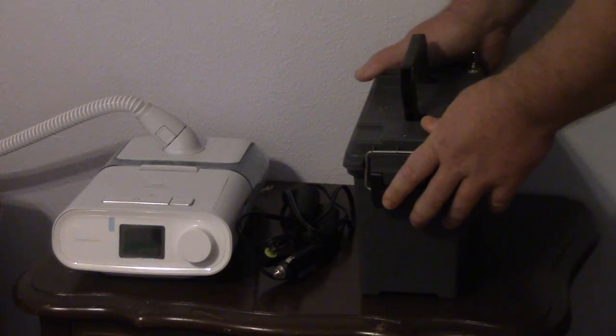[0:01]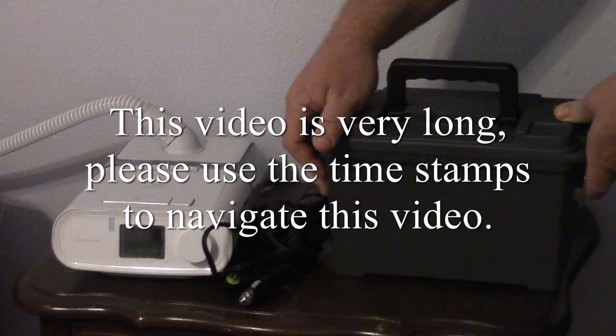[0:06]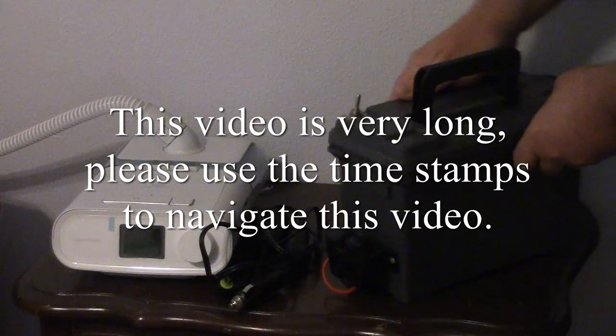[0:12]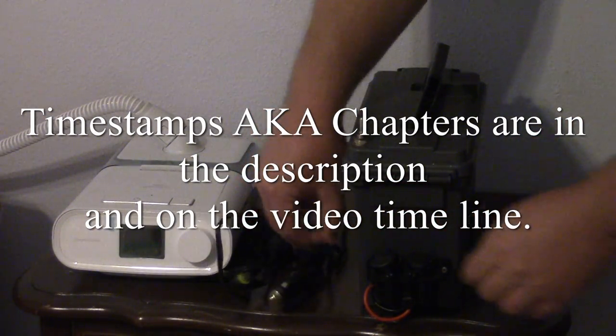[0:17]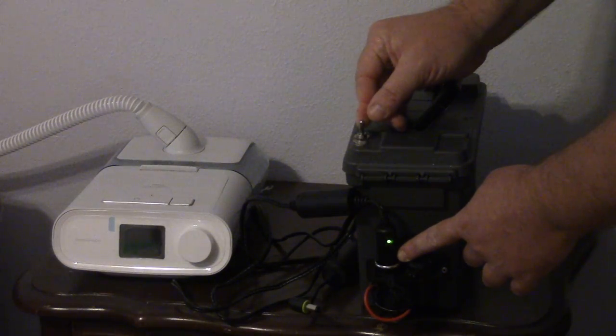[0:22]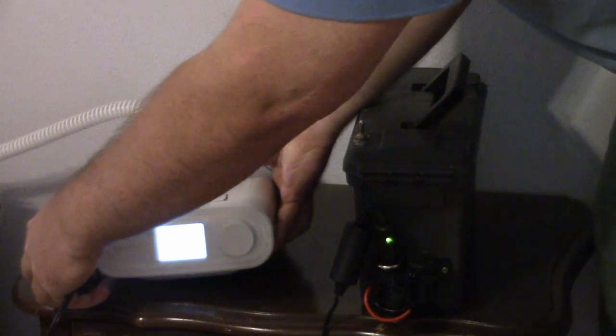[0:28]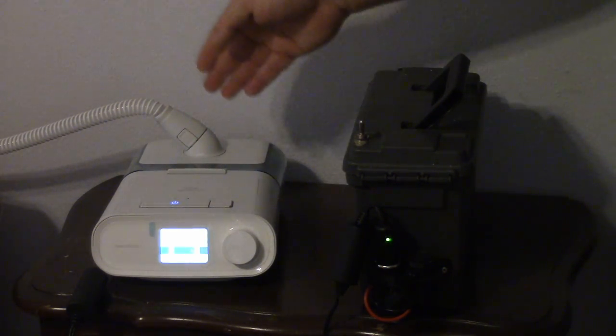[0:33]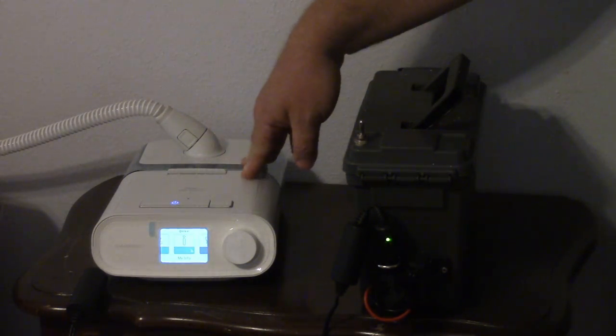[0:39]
Alright, I have built a battery backup box for my CPAP. It's a lithium ion battery, which is inside this nifty little ammo case from Harbor Freight. And it puts out a regulated 12 volts. So with my on-off switch, I can power it up and turn on my CPAP. This CPAP currently is set to have the heated hose, the humidity, and full pressure.
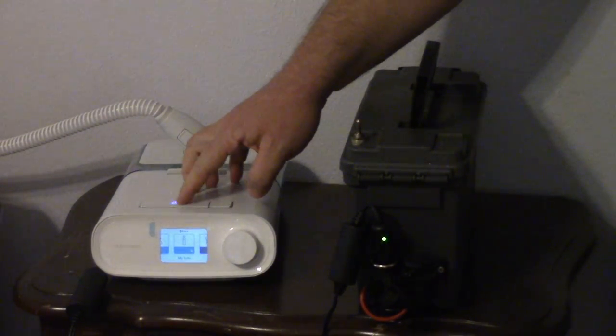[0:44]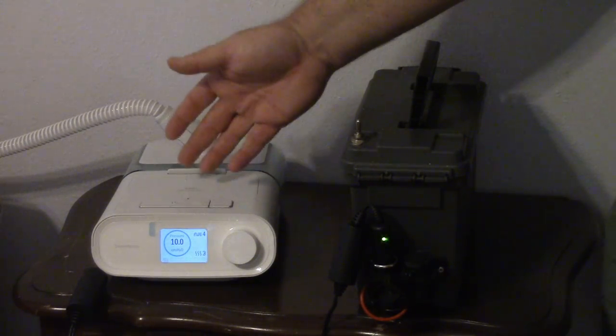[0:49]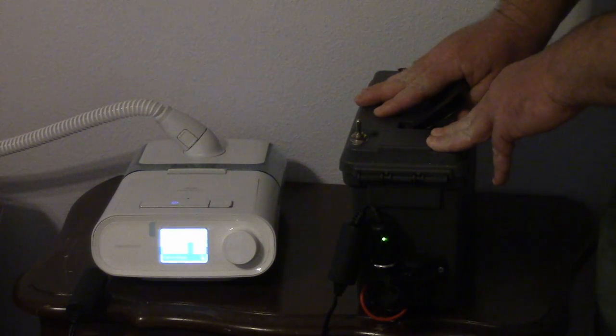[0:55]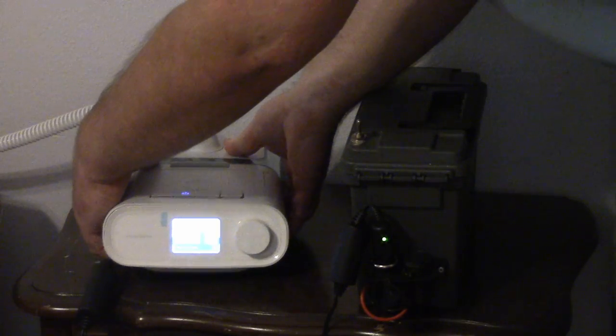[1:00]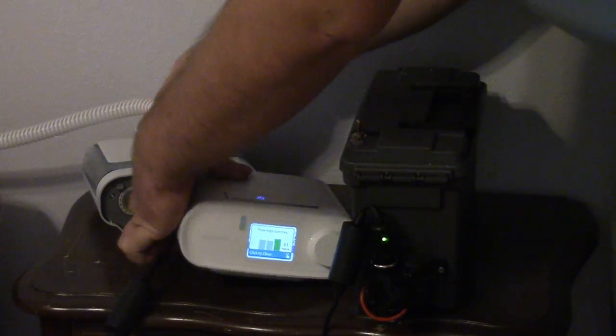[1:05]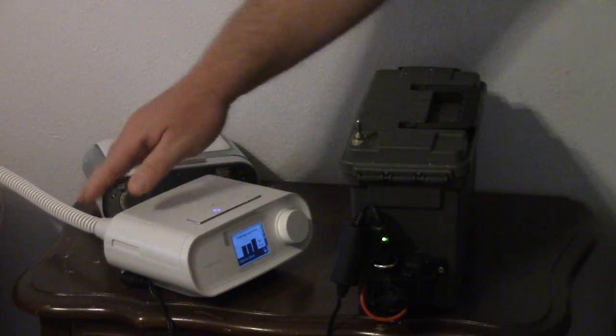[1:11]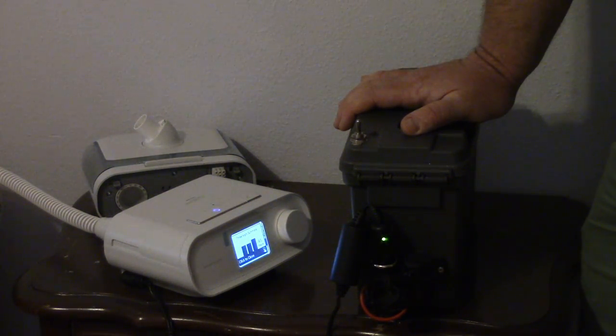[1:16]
And this little battery, it's not that little, it's pretty heavy, totally can run this. It might have enough power to actually run it for 8 hours. But if you reconfigure your CPAP, where you take the humidifier off, plug directly into the back of the CPAP, where you have no heat on the hose and no humidity, I think this thing could run it for like a week or more.
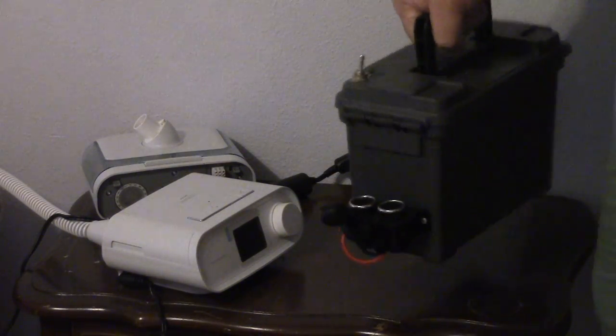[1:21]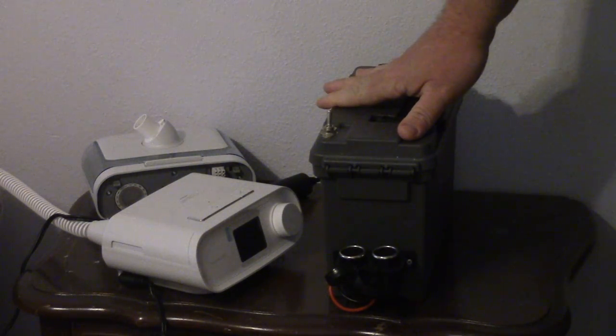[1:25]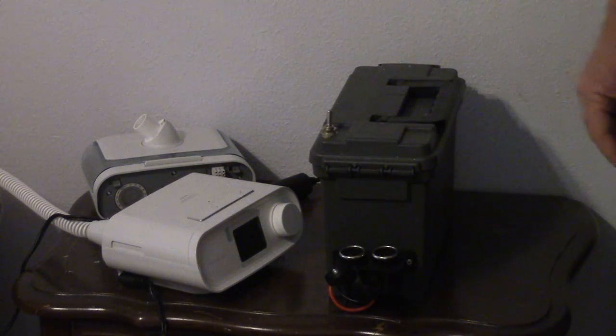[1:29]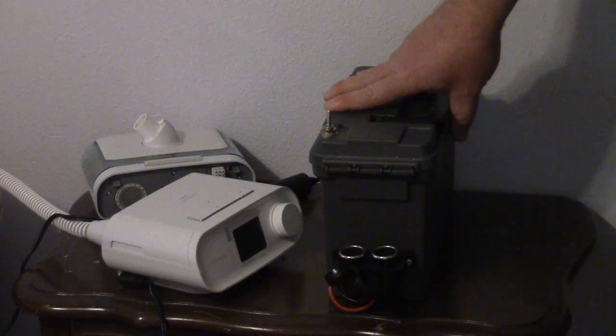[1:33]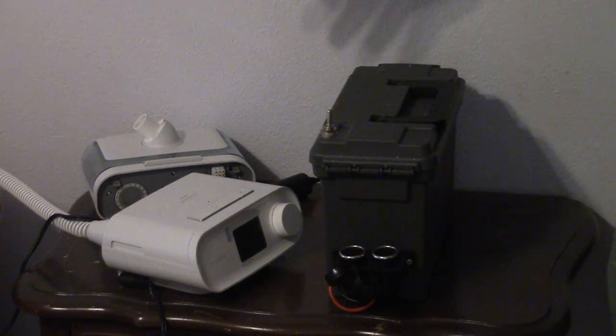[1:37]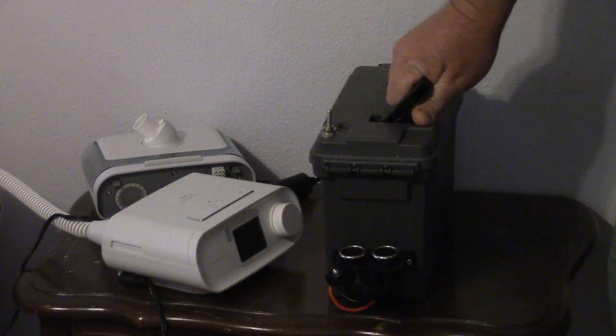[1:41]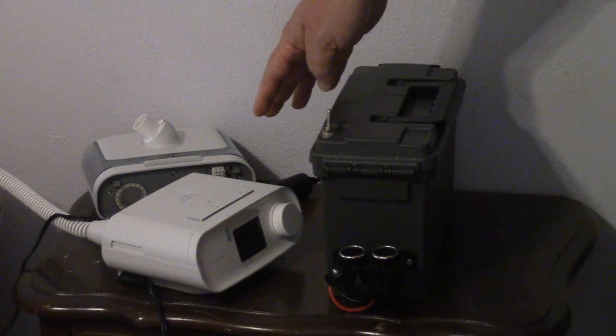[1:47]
And it's kind of heavy. I mean, you could carry it if you're backpacking, but you know, car camping or power outages, there's a lot of potential here for keeping your nights healthy and keeping devices going. I mean, New Orleans right now, out of power. Last winter, here in Texas where I live, we had a lot of rolling blackouts. You couldn't rely on constant power for your CPAP.
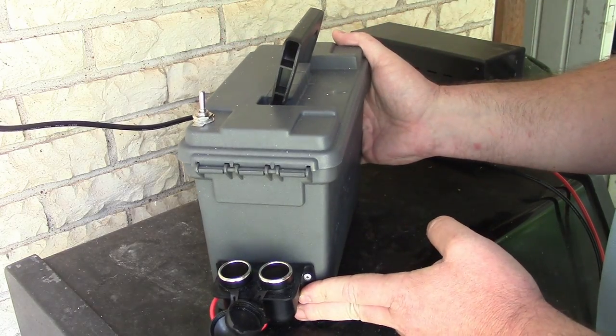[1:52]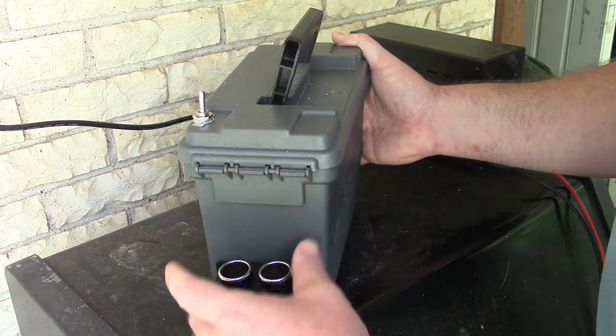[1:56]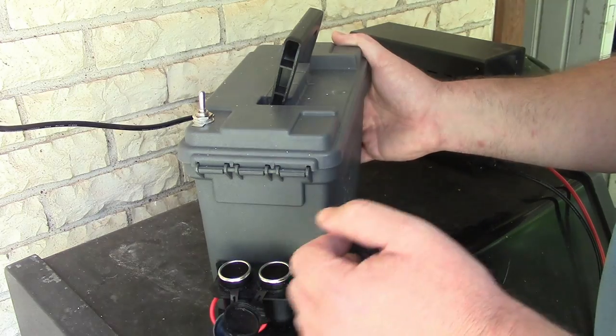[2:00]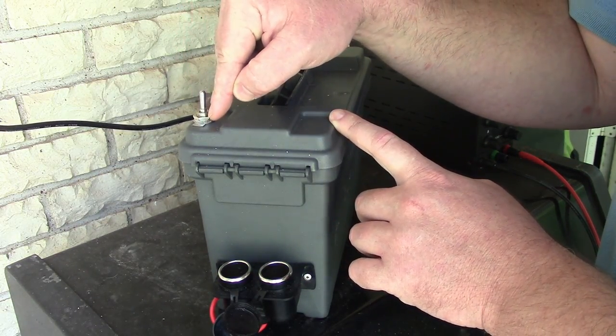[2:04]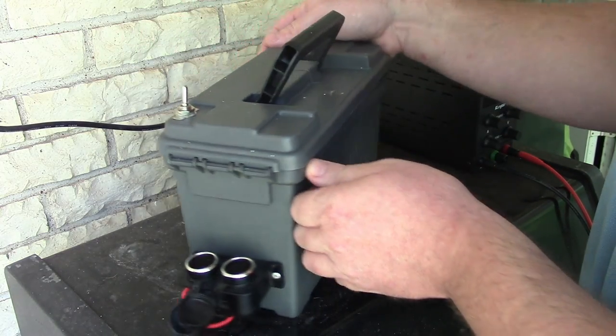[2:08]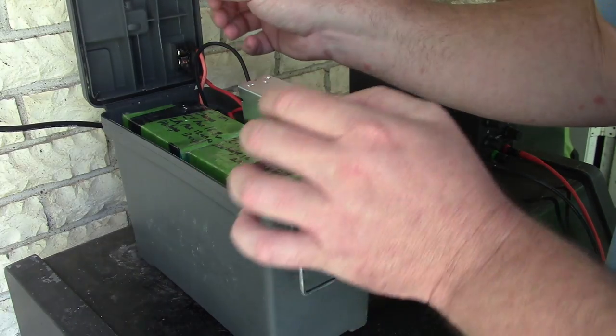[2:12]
All right, so a closer look. So I have the cigarette lighter 12 volt port here. This is something that I bought from the local auto parts store. And then I have this, I think a 20 amp switch, which is another thing from the auto parts store. And then coming to the inside, we have our buck converter.
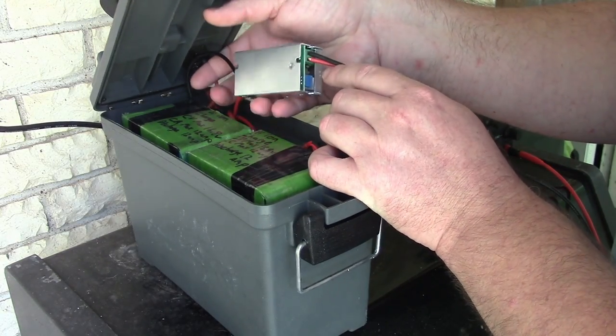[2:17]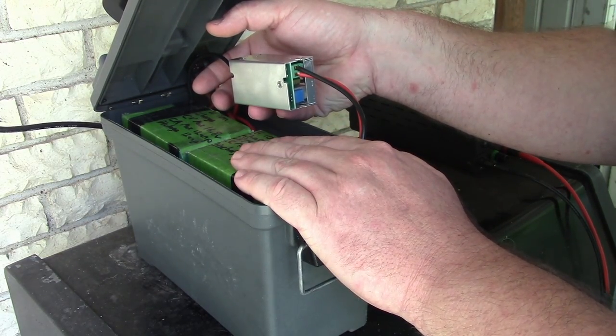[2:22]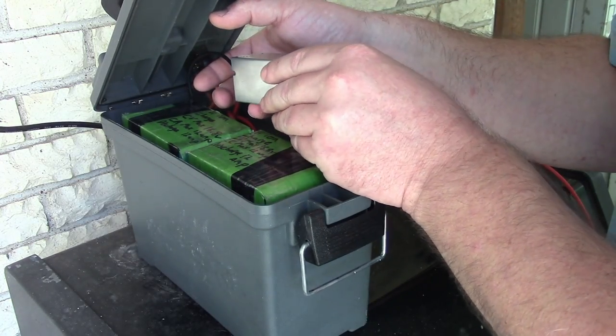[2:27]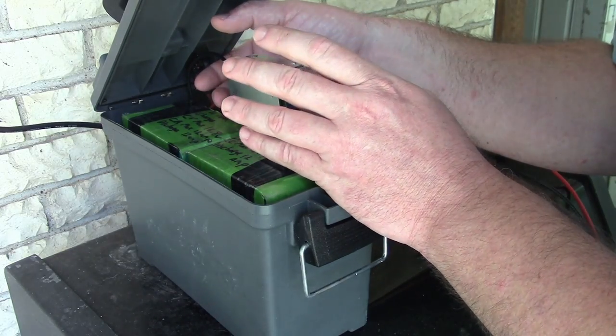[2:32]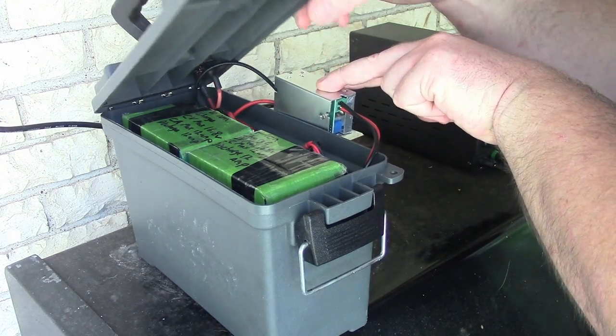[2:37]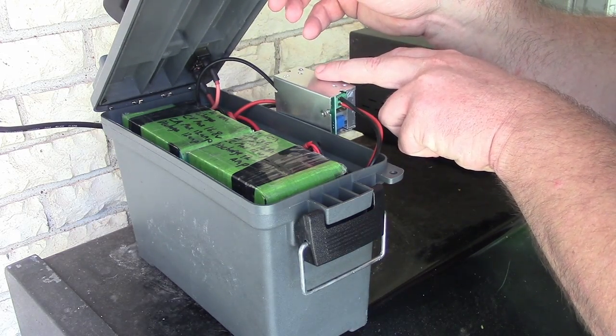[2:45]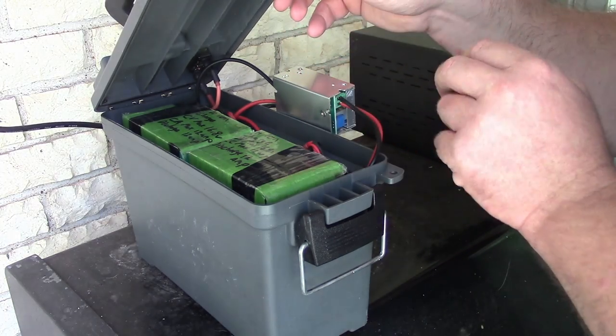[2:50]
This buck converter though, when I was running my CPAP with the humidity and with the heated hose, got hot within half an hour. I mean, it wasn't gonna melt down hot, or I don't think it was hot enough to destroy itself, but it was noticeably warm. So if you're trying to run a buck converter with the heat and the humidity, even though this says it's rated for 15 amp max and 10 amp continuous, and the CPAP says it uses 6.67 amps, being sealed up in here is probably not a good idea.
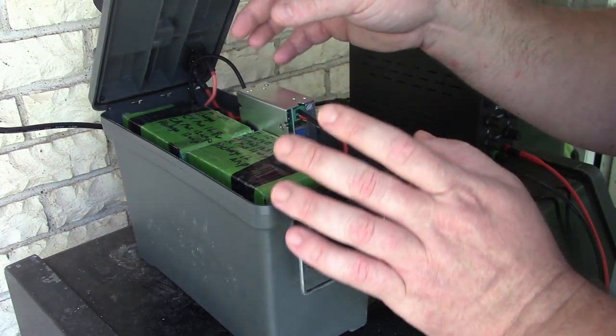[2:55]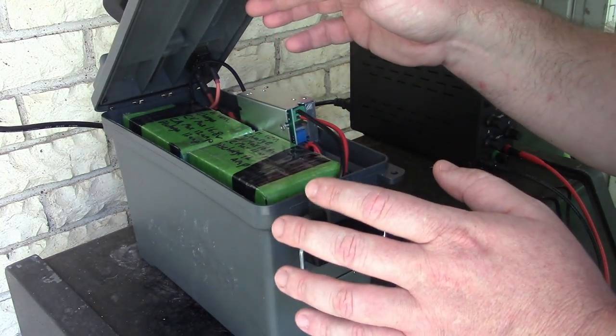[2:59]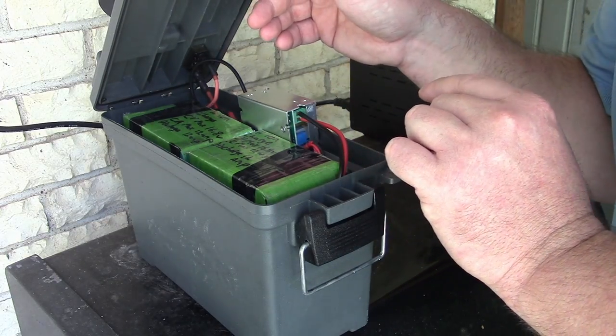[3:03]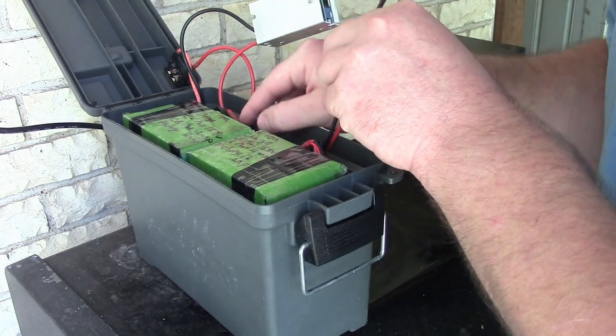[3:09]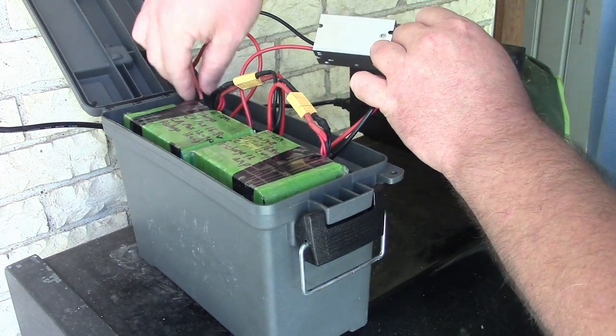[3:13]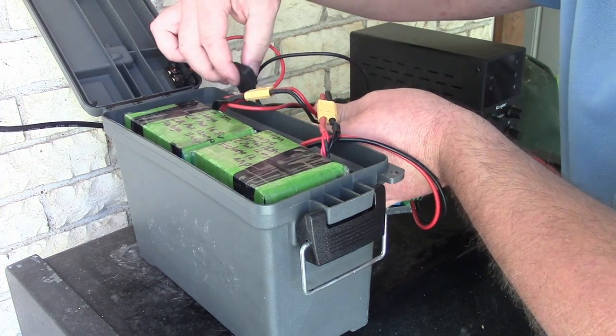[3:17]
You probably just shouldn't try to run the humidity on a small battery backup to begin with. But just running the CPAP itself with no heat or humidity, this thing didn't change temperature at all. It handled it perfectly. Let's dissect this a little bit more. We also have, right here, a fuse. That's got a little 10 amp fuse right there.
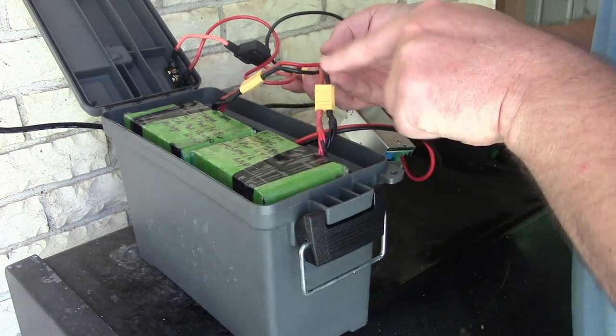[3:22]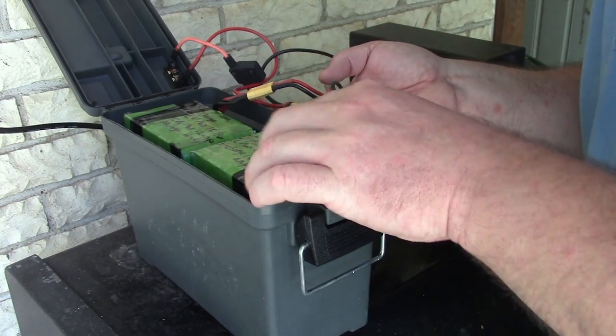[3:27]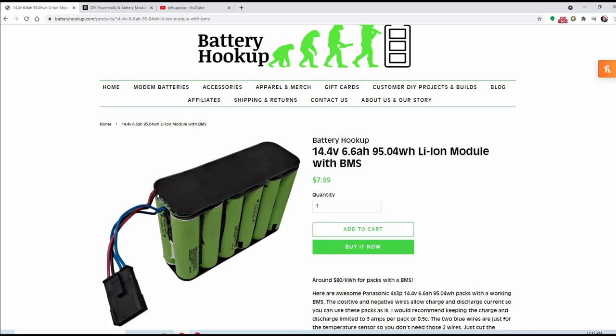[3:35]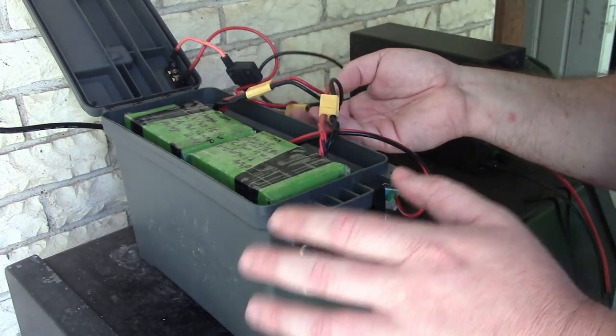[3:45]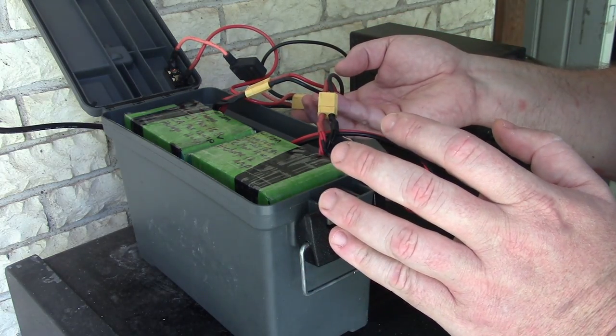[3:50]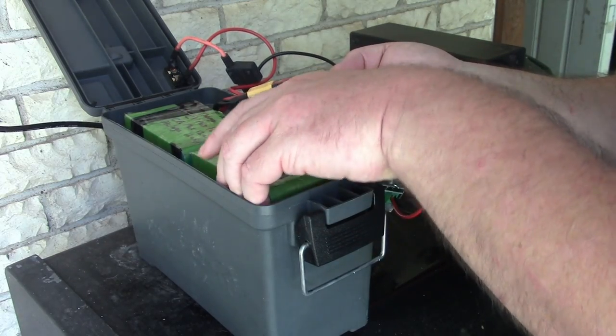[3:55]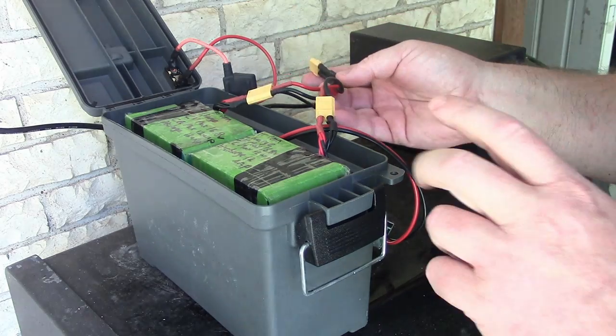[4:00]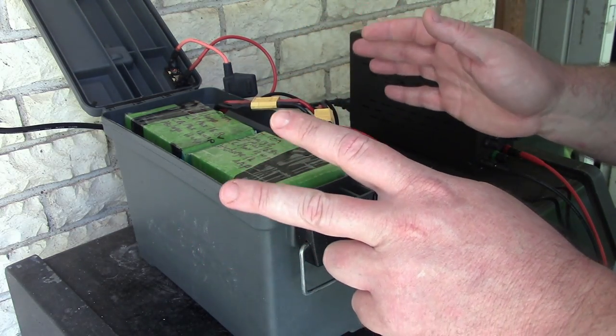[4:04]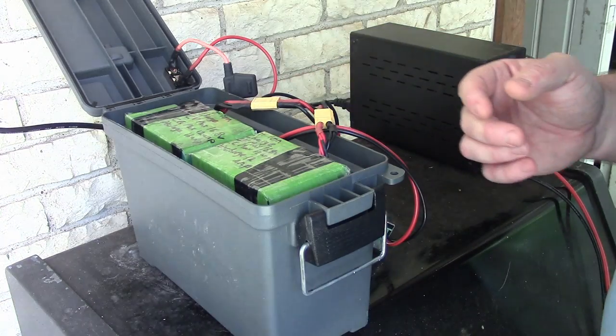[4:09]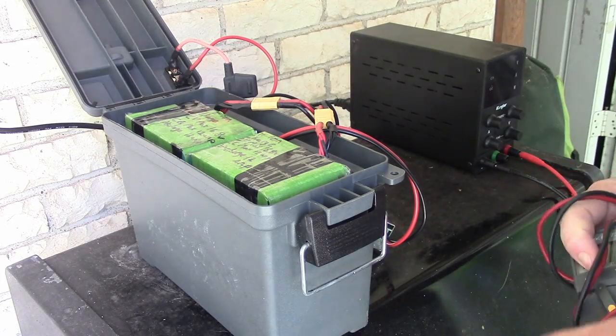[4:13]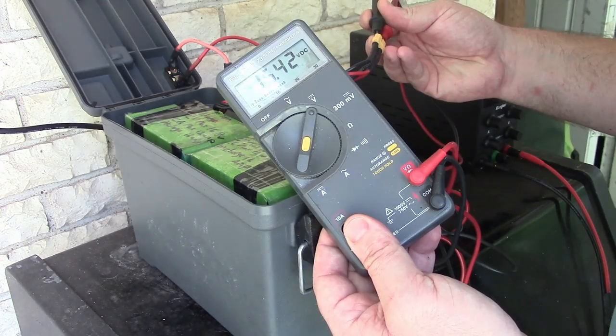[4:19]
I have used this thing for 2 nights with only CPAP, no heat or humidity, and I've used it for half an hour running everything. And then it has sat for weeks. So let's just check the voltage. So we're at 15.4 volts. It's been sitting for weeks.
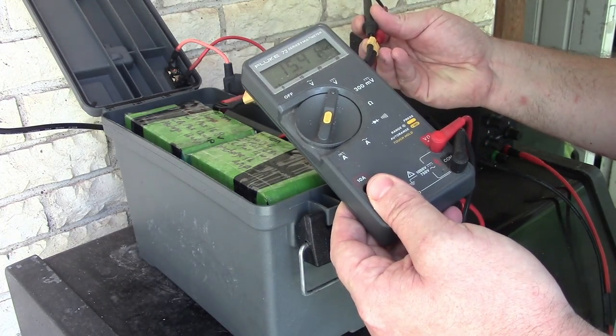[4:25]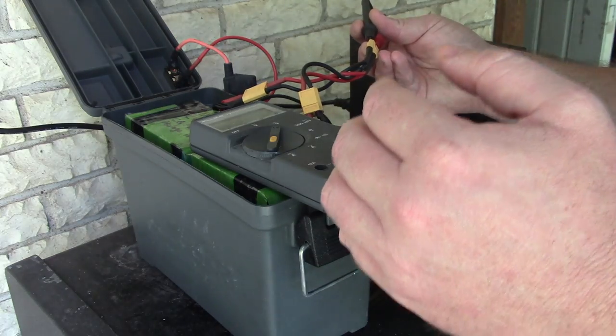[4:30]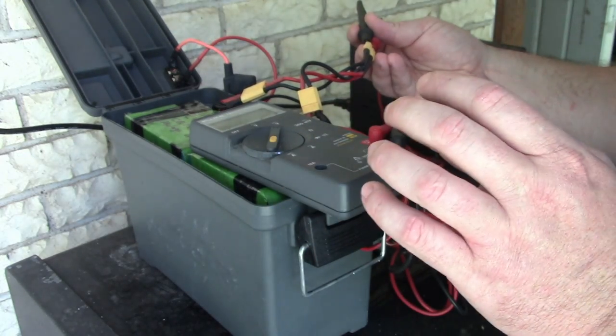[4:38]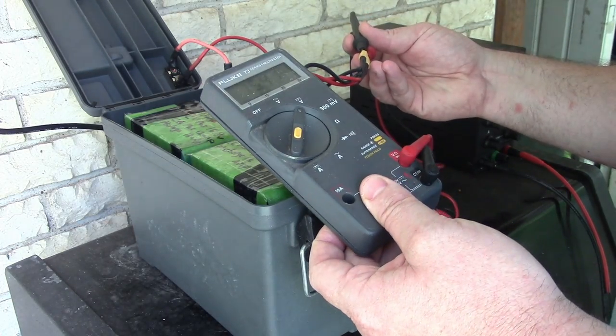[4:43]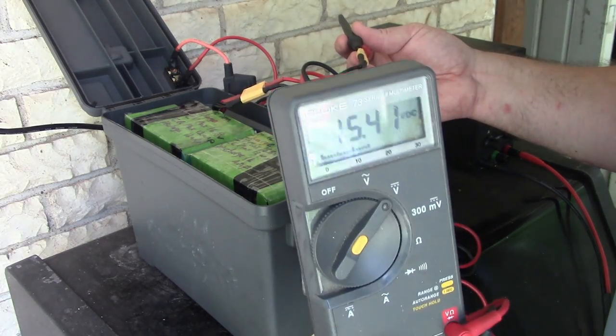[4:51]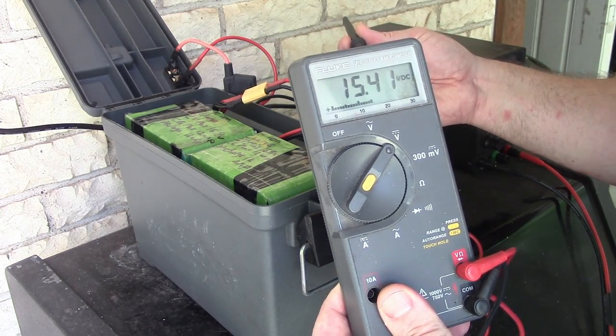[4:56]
These are used batteries off of an internet store. So that's pretty promising. I only charged it up to maybe 16.2 volts. And I got 2 nights plus some screwing around, heavy loads, a little load test on it. So I think we have more than enough to last over a week on CPAP only. And if I'd fully charged it, I haven't tested it that far, maybe we could push 2 weeks of battery backup for the CPAP only.
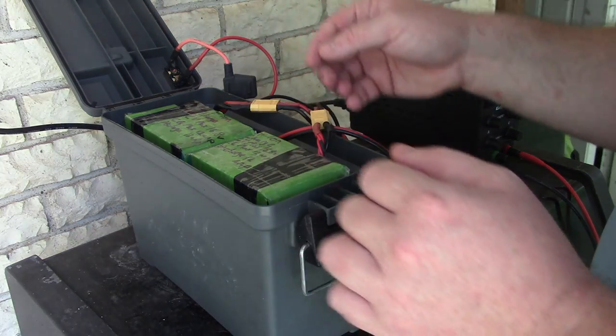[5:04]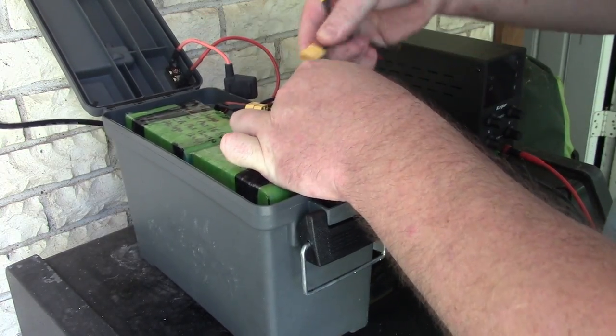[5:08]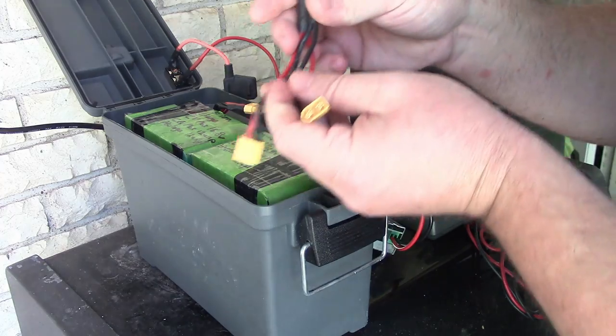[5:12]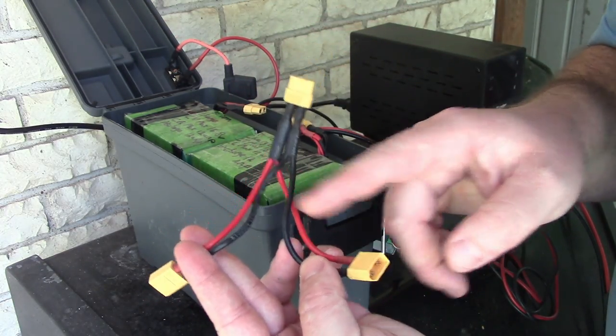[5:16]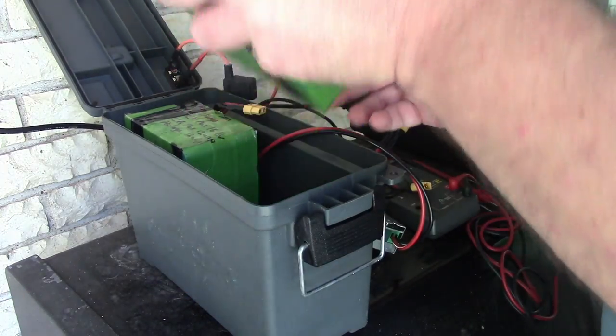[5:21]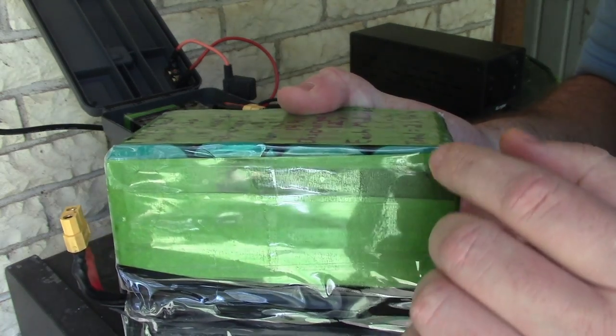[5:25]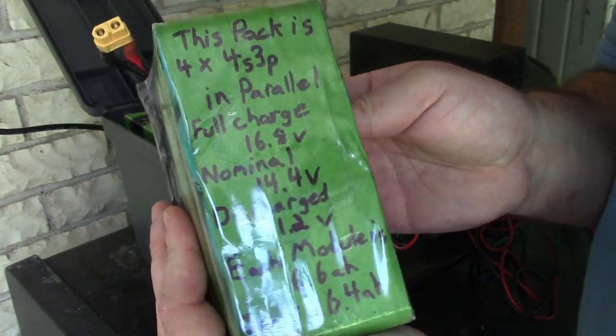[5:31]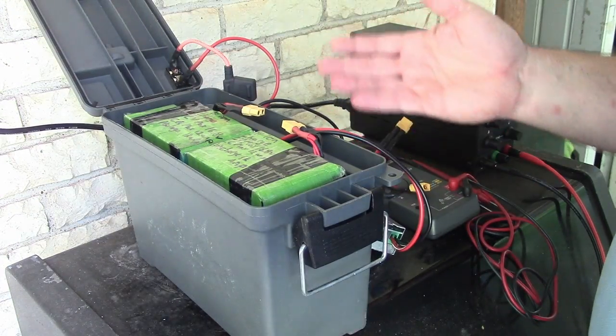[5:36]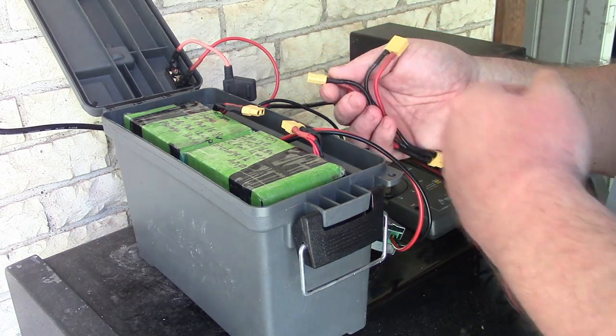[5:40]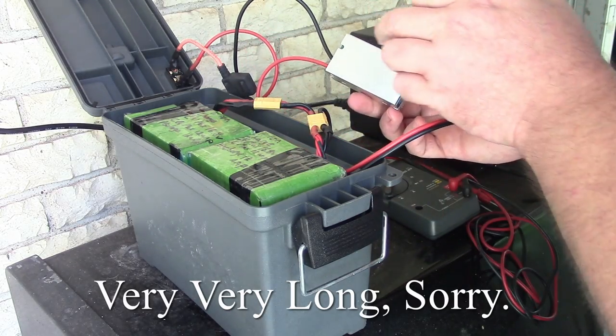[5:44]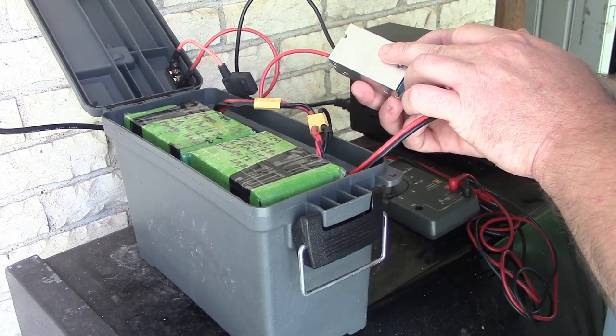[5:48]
So that's pretty promising. Another component in here is this parallel wire that I made. It basically just brings the two batteries together as one, puts them in parallel, and then the individual packs, I packaged them up like this. You can see there's four packs inside each one of these, and I wrote all of the specifications on it. So yeah, I'm real happy with this, and I'll show exactly how I made it. This video might get long because of that, but the most important thing, I think, is everywhere I read on the internet, they all said that you really needed to regulate the voltage.
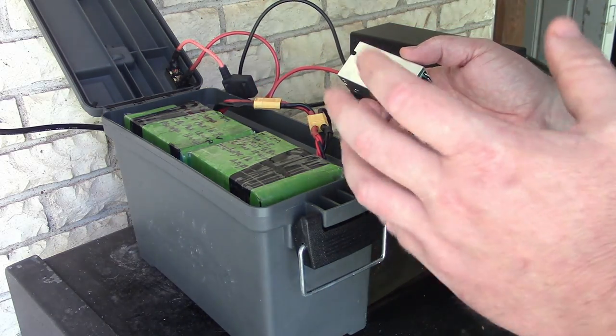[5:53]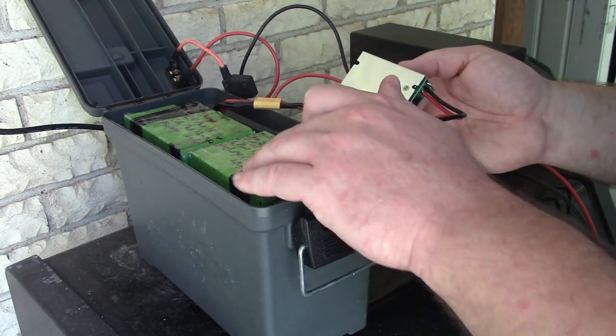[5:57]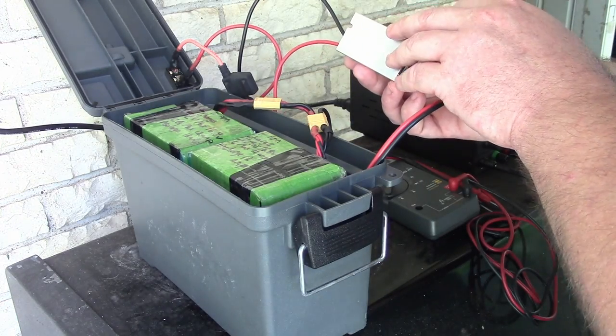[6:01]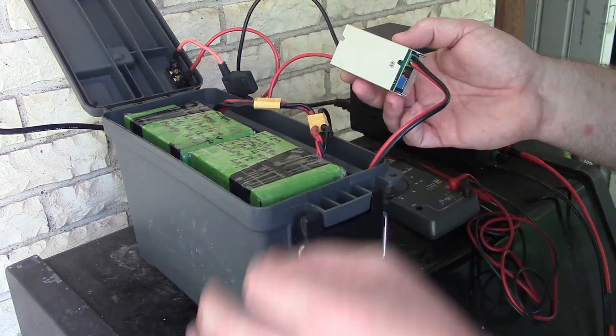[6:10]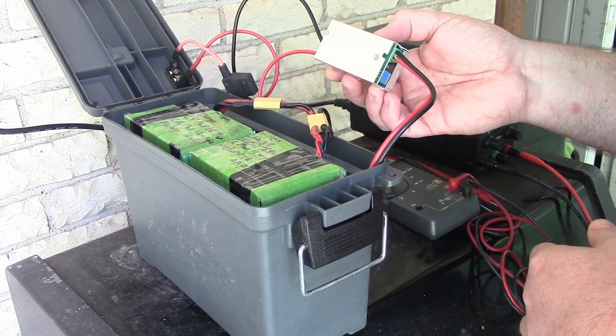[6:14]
The Philips Respironics DreamStation that I use can't handle the 16.5 volt peak if this is fully charged. So this DC to DC buck converter lets you regulate the voltage down to exactly 12 volts, 12.1, just whatever you feel like.
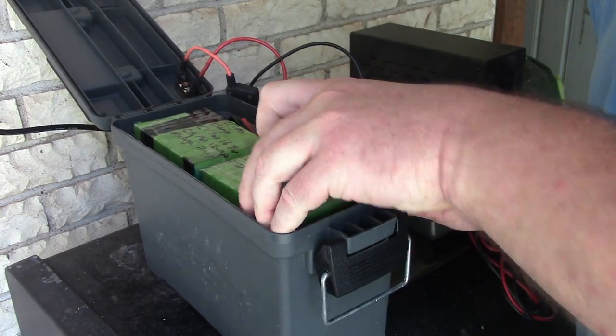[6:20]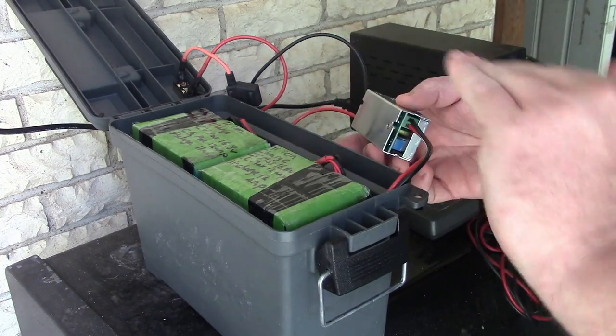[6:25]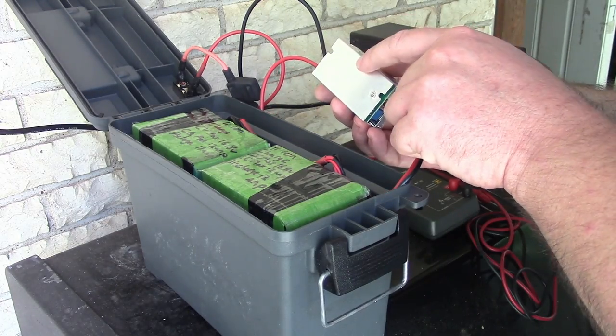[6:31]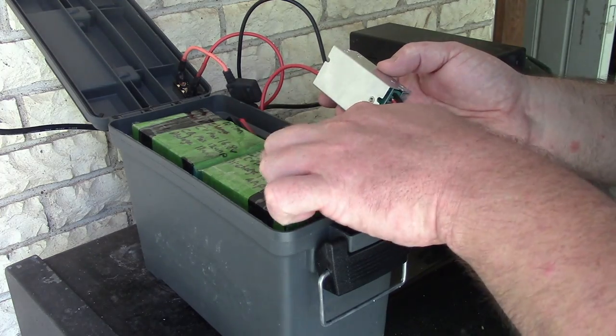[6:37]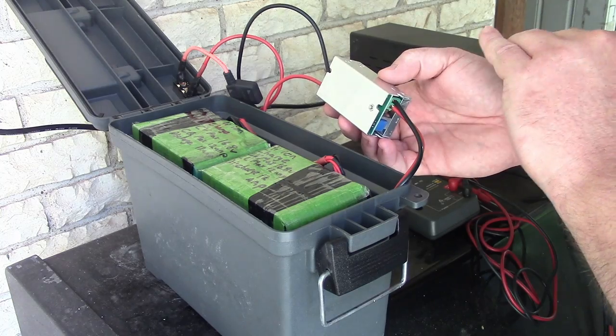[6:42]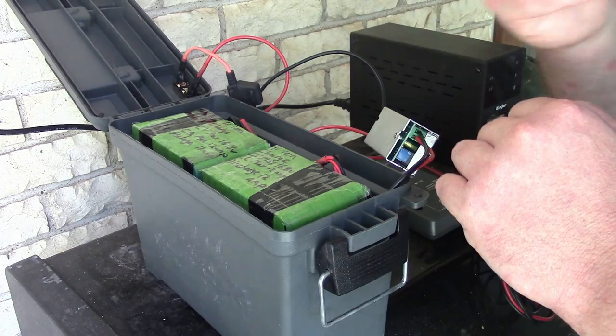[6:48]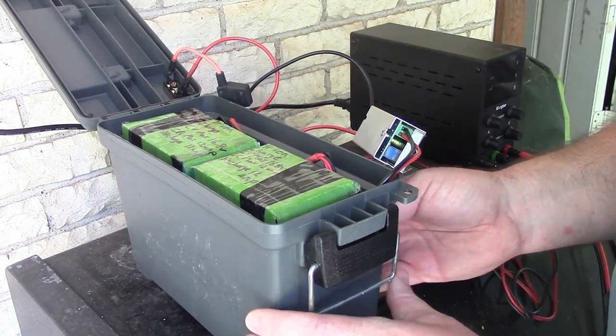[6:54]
But the discharge voltage of these packs is 11.2 volts. That's when the BMS inside each of the individual packs will protect the battery and turn itself off. With this thing set to 12 volts, I've read comments, haven't tested it myself, that when the battery voltage gets below what you have this set at, it will turn off. That'll be a better level of battery protection than letting the BMSs protect it. So in theory, we could just use this until it quits working and then charge it up, and we won't damage the batteries, and it'll be good to go.
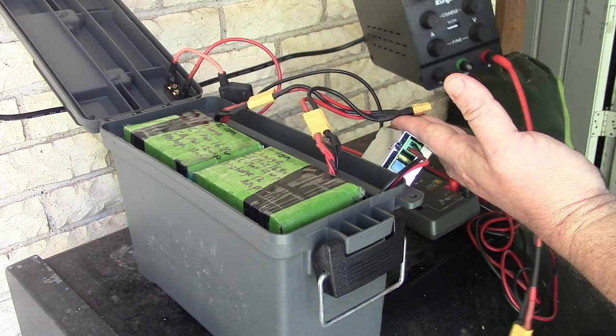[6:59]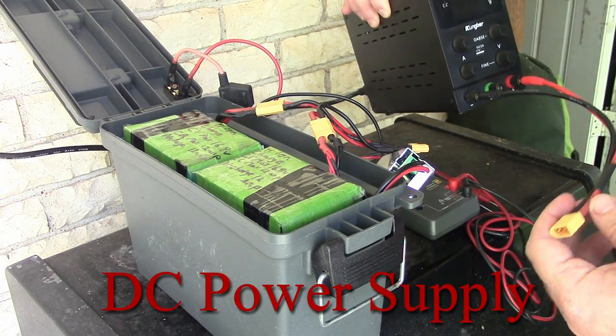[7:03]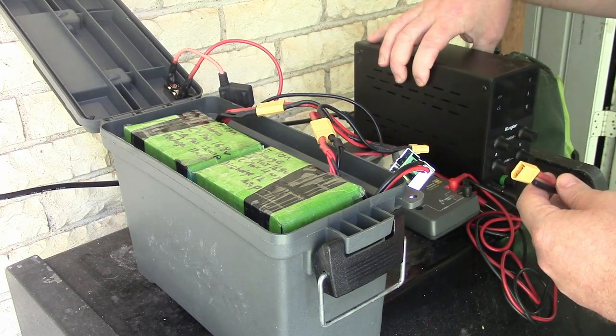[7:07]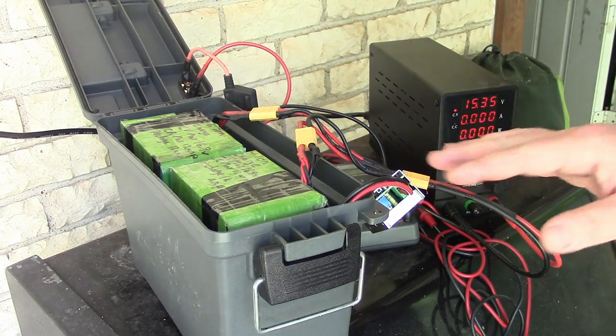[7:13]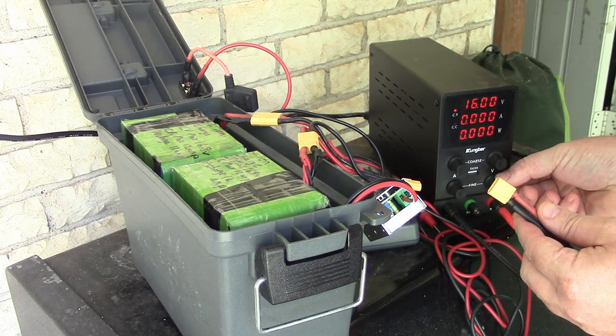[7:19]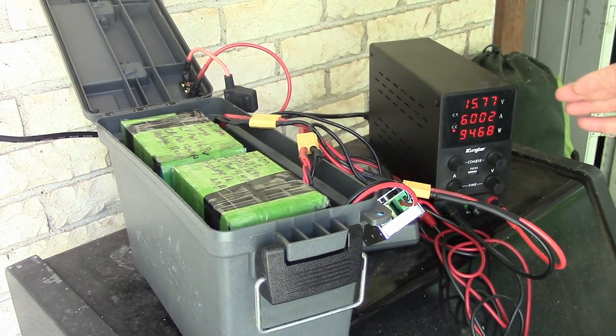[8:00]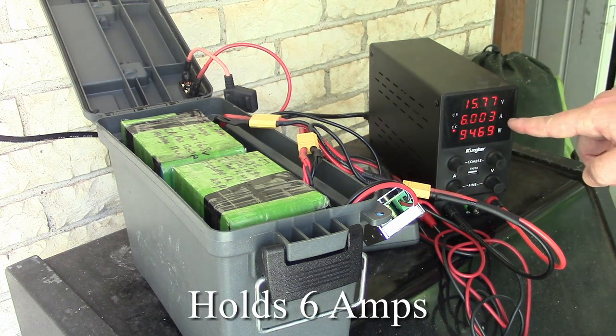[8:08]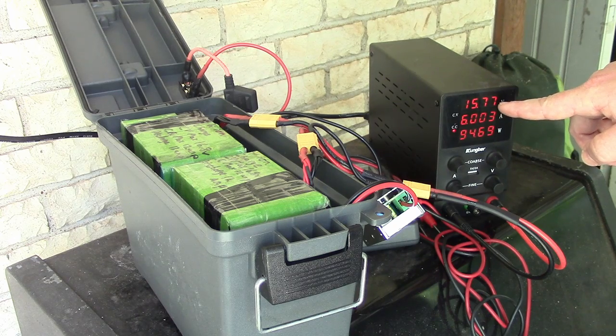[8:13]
And then the amperage. With these two packs, I could do, I think, a 24 amp charge if I want. But just to keep this from getting too hot, I'm going to take the amps down to 6 or something. So I'm going to charge this at 6 amps continuous, and that will slowly climb the voltage up. Once it reaches 16.2, let me make sure we're still set at 16.2, it'll just hold a steady voltage until it's done. So basically it holds the current until it reaches the desired voltage. Then it holds the desired voltage, and you see the amps start to fall off. Once you're down to a few hundred milliamps or so, you can consider it charged.
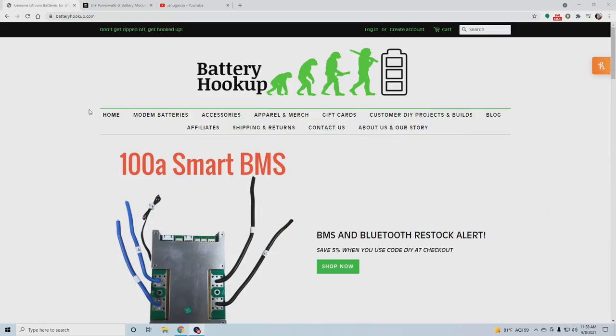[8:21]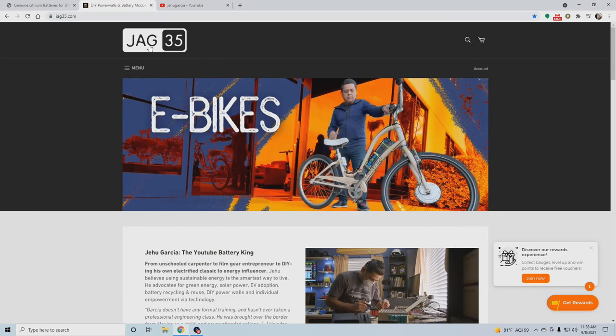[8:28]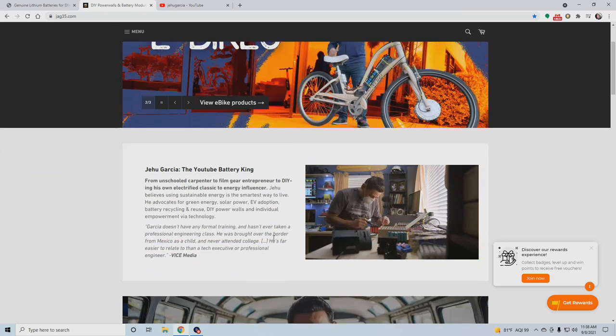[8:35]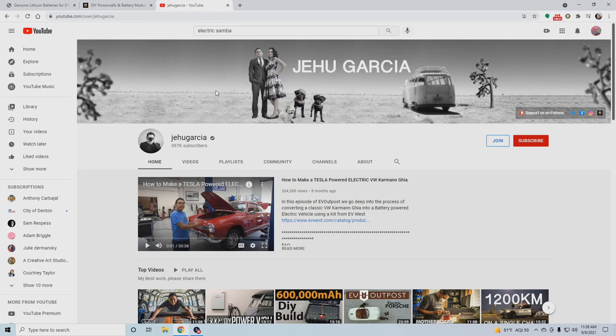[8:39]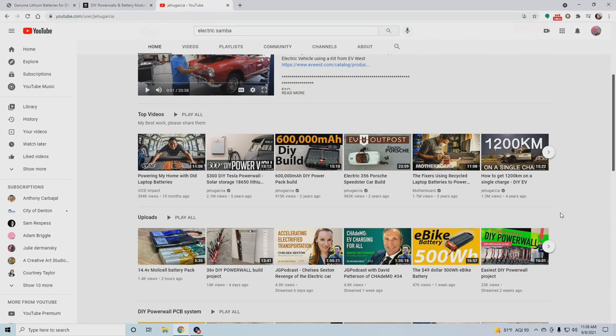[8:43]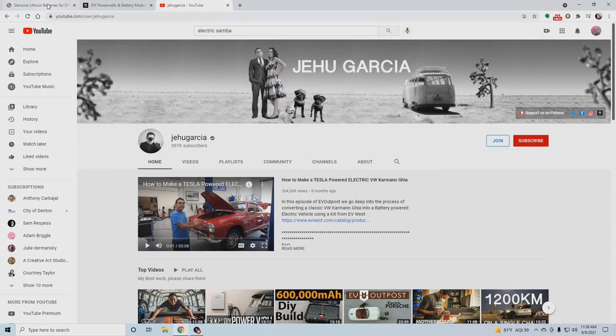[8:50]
Okay, so real quick, when you're shopping around for batteries, the two main websites that I'm familiar with are Battery Hookup and JAG35. JAG35 is this Jehu Garcia guy. If you're looking into batteries, you should be familiar with his channel because he is huge in the lithium ion battery space. I mean, look at this. He'll teach you everything you want to know about anything. I haven't bought from him yet, but maybe on my next project I will.
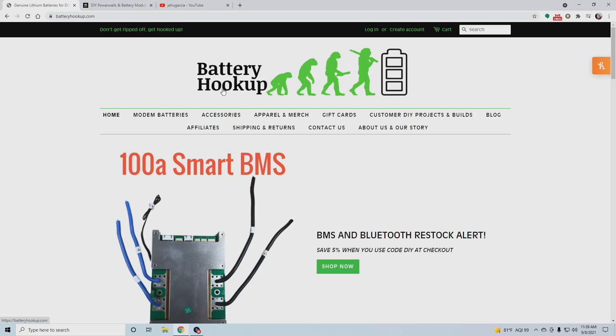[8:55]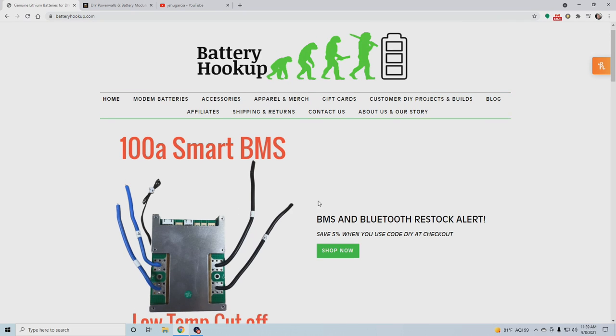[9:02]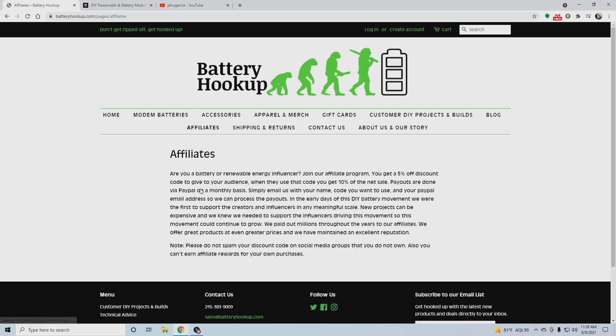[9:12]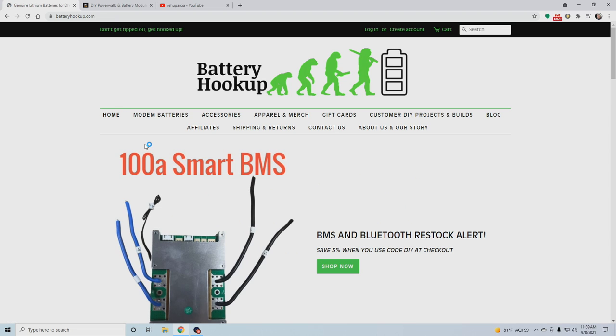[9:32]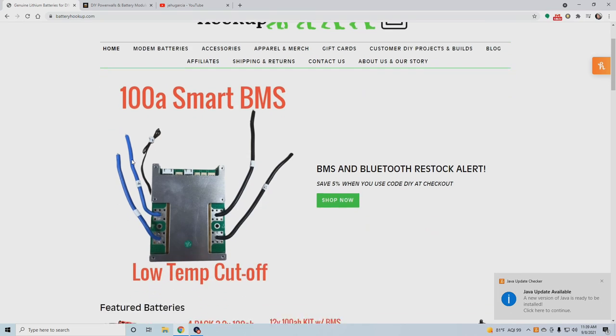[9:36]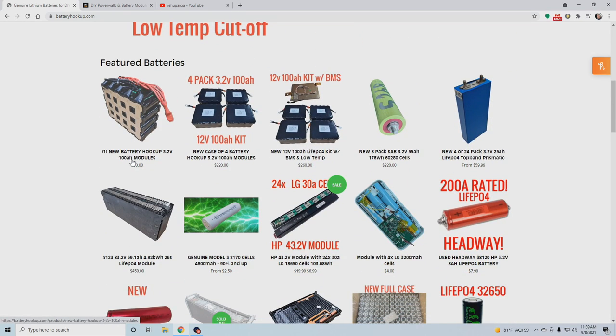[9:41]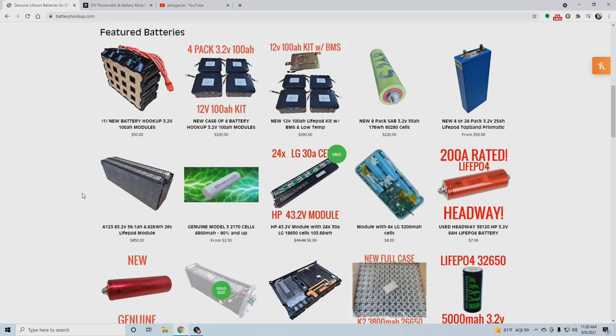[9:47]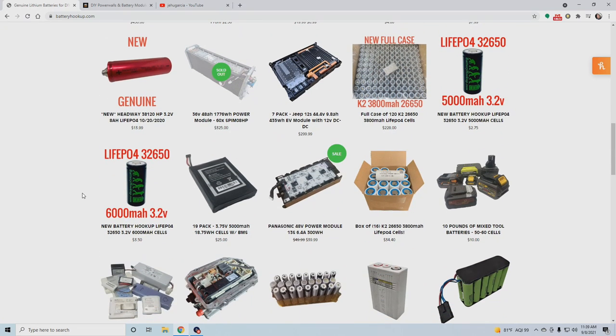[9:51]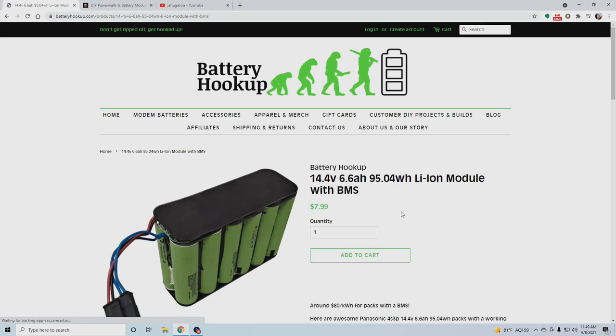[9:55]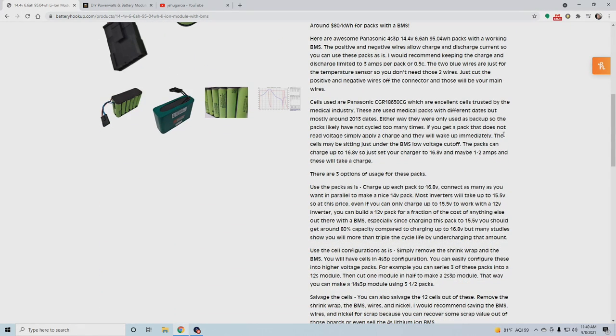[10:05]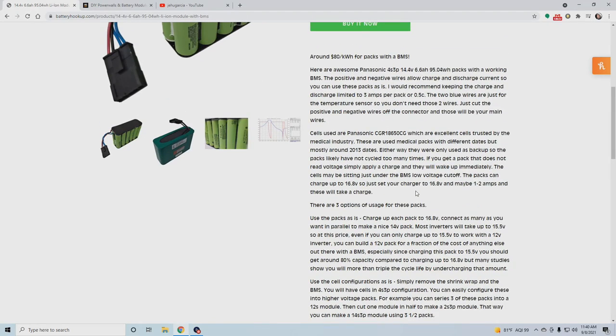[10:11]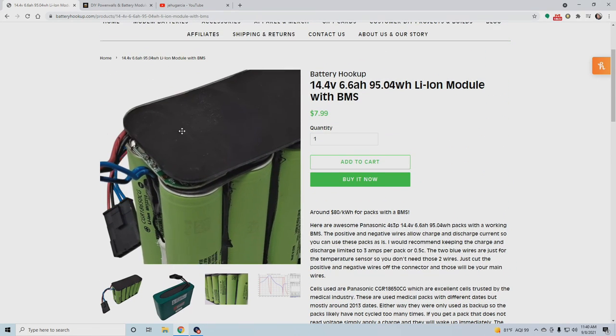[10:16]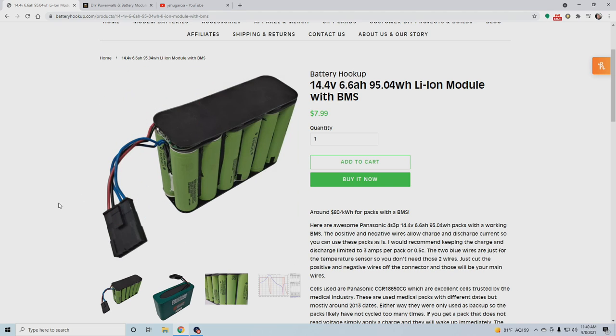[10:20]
But anyways, shopping for batteries. These two websites have tons of used batteries, new old stock batteries, things that got built and then never found a product to go into, and it's always changing. So this right here, this is what I bought. These 14.4 volt nominal 6.6 amp hour lithium ion modules. The lithium ions are the ones that charge up to like 16.5, 16.7 volts. What I liked about these is that they were plug and play. They have the BMS right in there, and they're good to go.
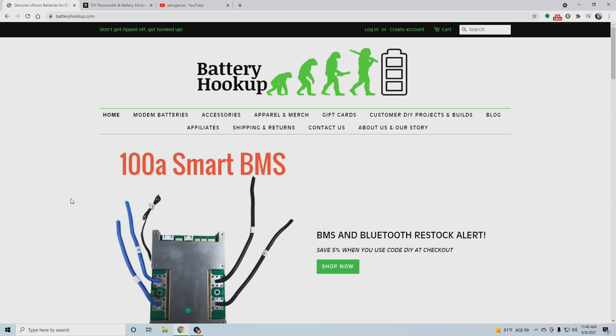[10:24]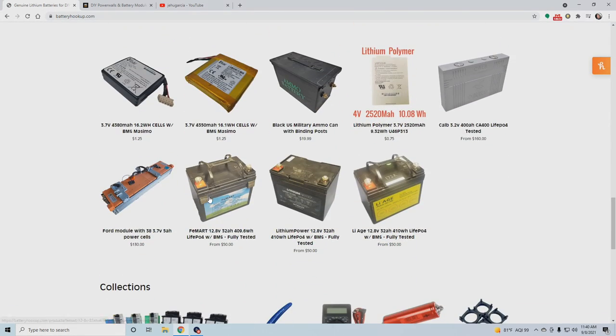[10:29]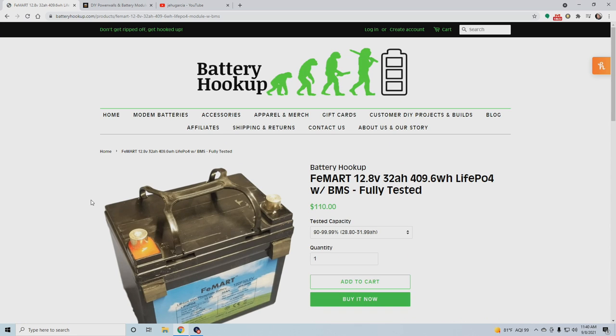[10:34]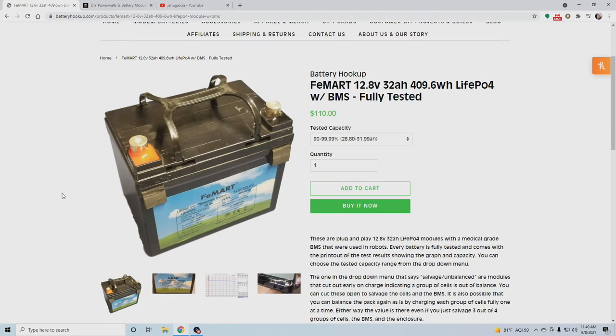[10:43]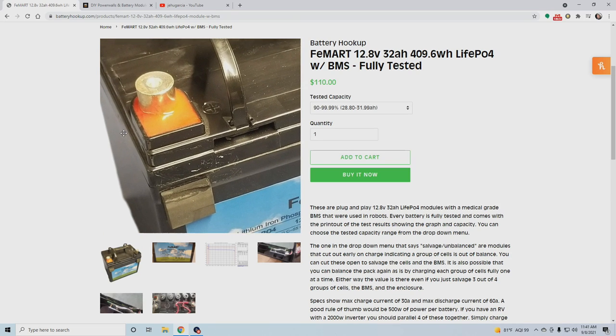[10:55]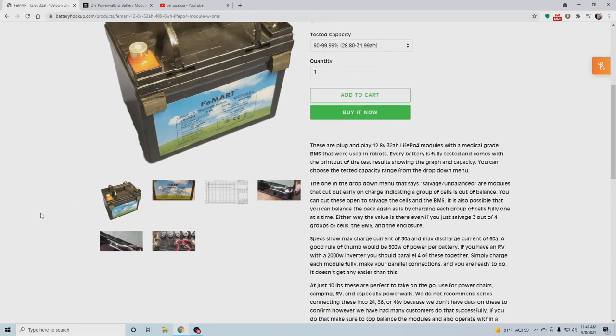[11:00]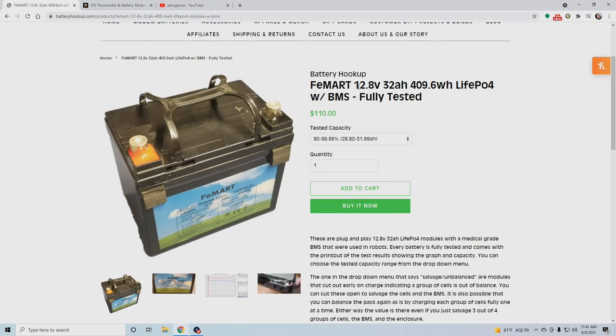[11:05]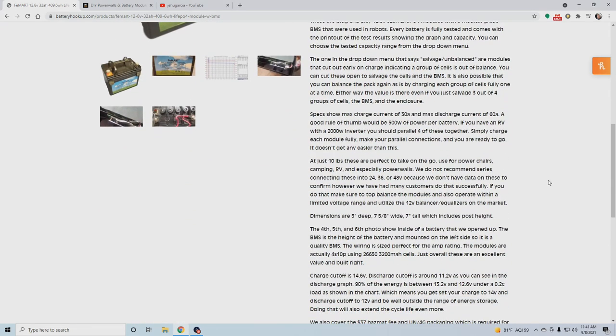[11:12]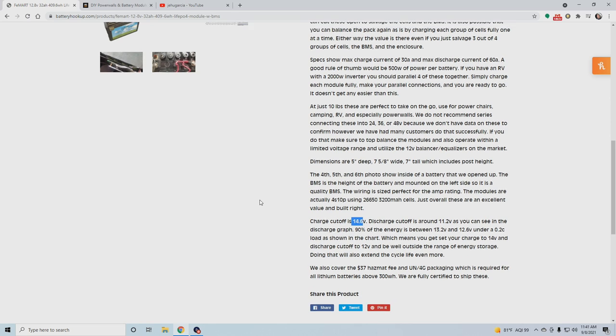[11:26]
But there are other options, other chemistries you might want to look into, such as lithium iron phosphate. Whereas those lithium ion batteries have a higher power density, they don't cycle as many times. The way I'm charging them at like 16.1, 16.2 volts, that's an undercharge, so maybe they'll last 1,000 cycles if I do it that way. I don't know. But these lithium iron phosphate batteries are the ones that from the factory will cycle thousands of times. Their voltage is a little bit different. Their nominal voltage is 12.8, which is comparable to a regular lead acid battery, more or less. And they only charge up to 14.6 volts. So if it's fully charged at 14.6, maybe you'd still need a buck converter for the power regulation, but whatever.
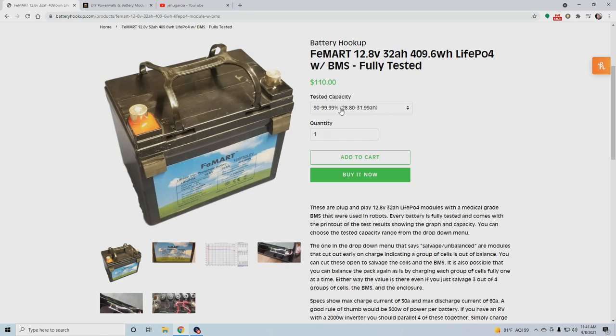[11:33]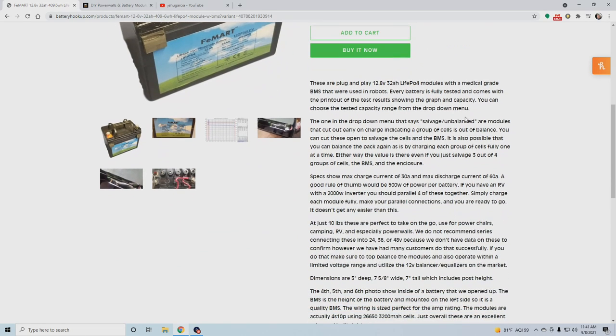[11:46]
So this battery, testing really good, is $110, but you could go for a less well testing battery and save quite a bit of money. One or two of these, I mean, what is that? 32 amp hours.
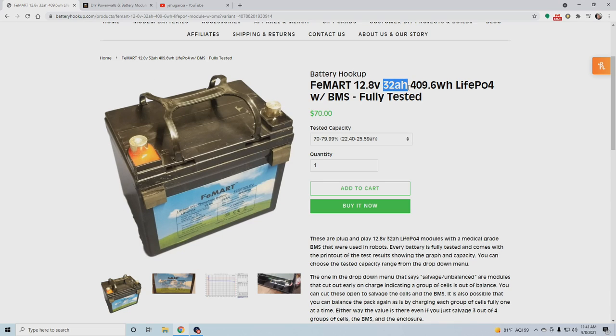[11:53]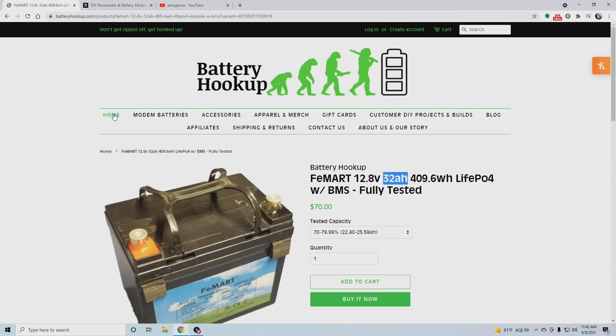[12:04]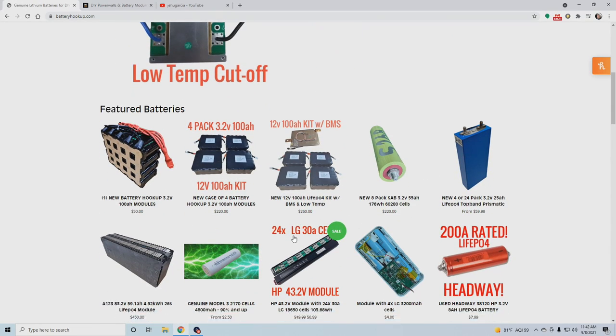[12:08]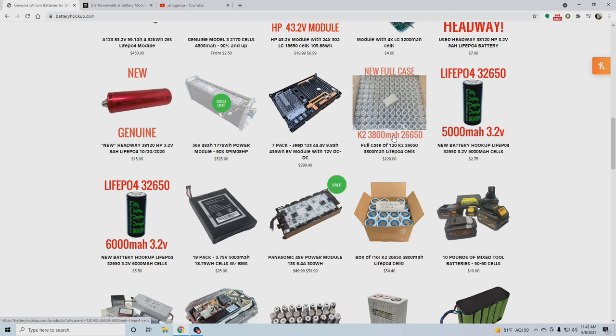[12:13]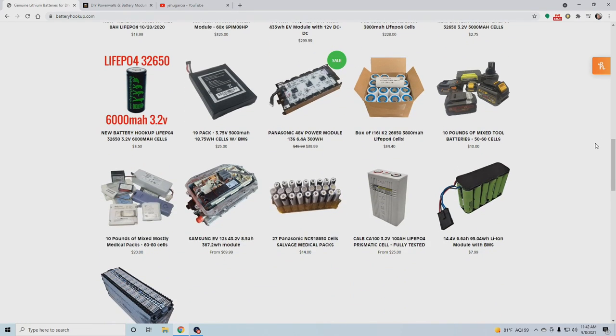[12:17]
That could be a week of cell phone charging and CPAP backup in case the power goes out. Whatever battery you choose to buy, look around, check out both the websites, see if any of these deals just scream at you. That's what you want to mess with. And if you're more adventurous, you can build your own pack from the scratch up. And if you're less, you can buy something like I did that is totally ready to go, plug and play.
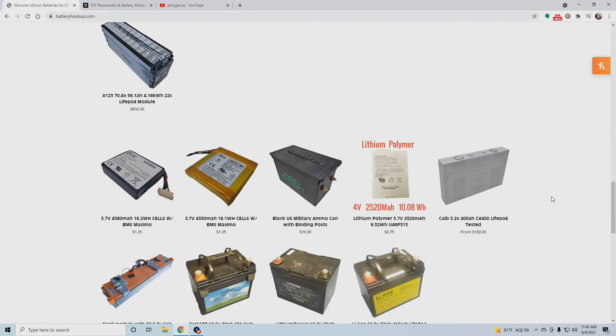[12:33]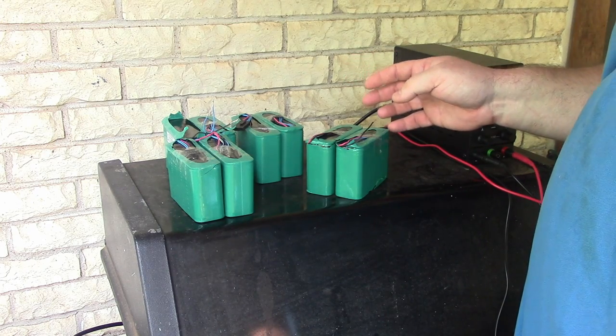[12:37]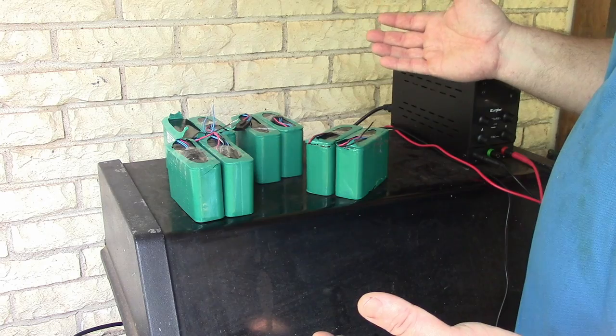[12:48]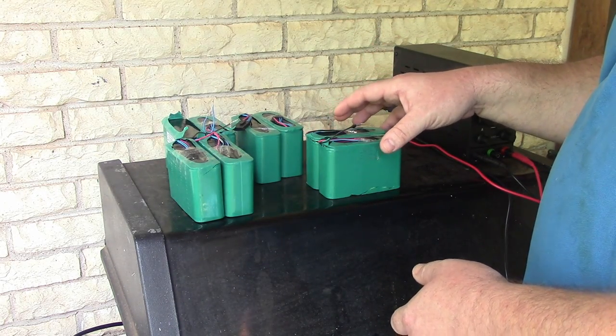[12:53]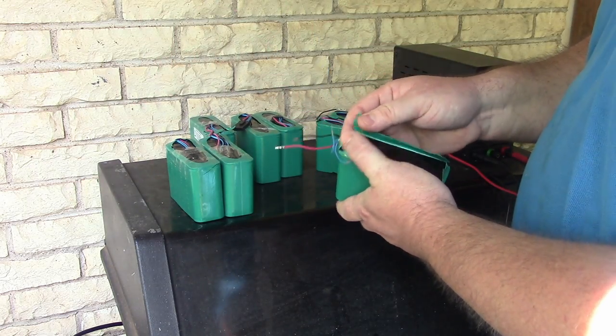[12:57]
Where I just put all mine in a parallel, right? So, anyways, now let's get to the build aspect of this. So these just came in from Battery Hookup. What I want to do is charge them up, and then see if they will hold that charge sitting there, and if they all hold it, I'll use them all, and if not, I'll just use some of them, or maybe buy another one.
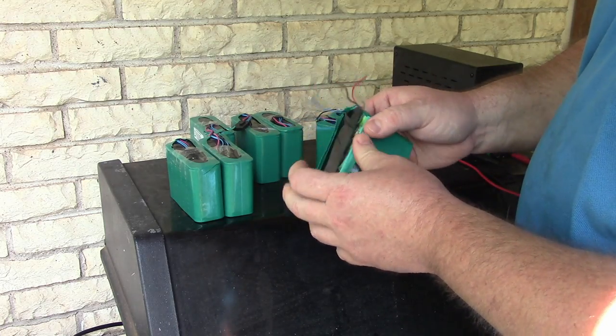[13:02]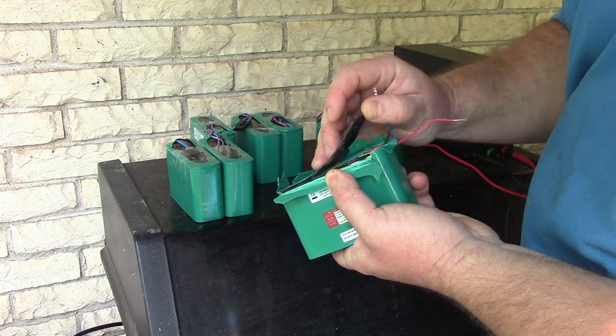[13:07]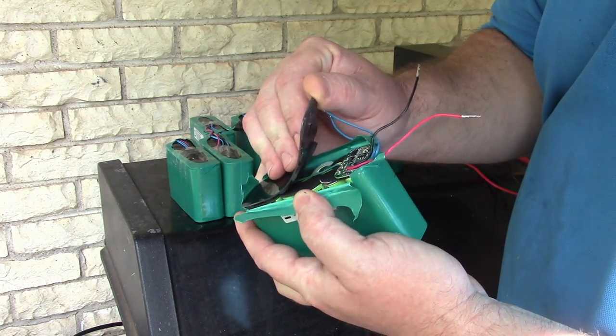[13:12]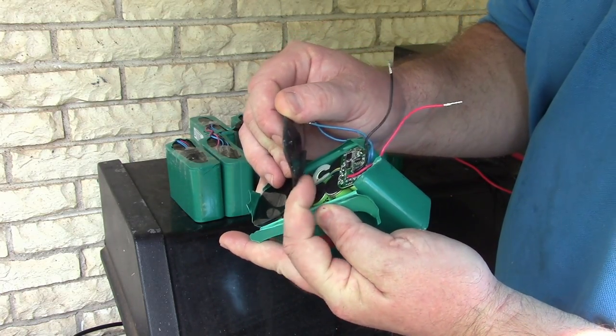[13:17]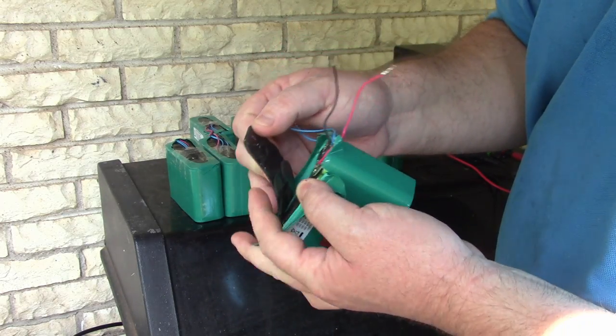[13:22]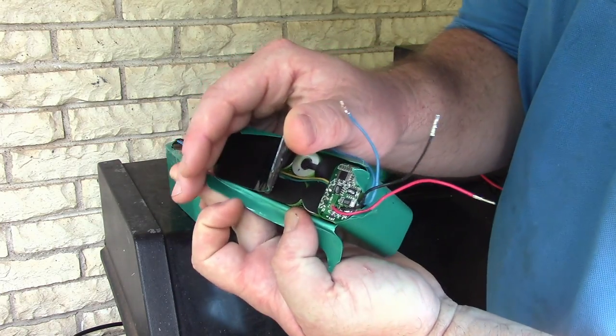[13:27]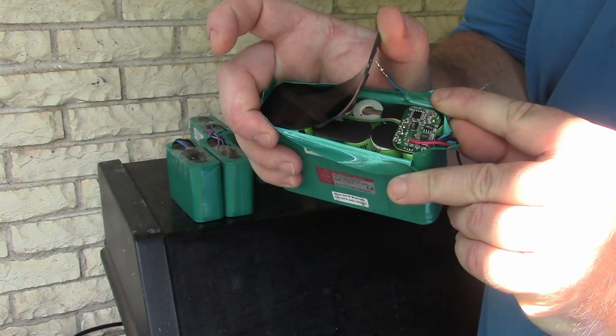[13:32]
This particular battery, I popped the top off of it just to look at how it was constructed, and I think it's built well. I mean, it's a medical pack, and they charge like $150 for these. So you can see there's an isolator ring for where they go from the positive to the negative. That has all this self-adhesive sticky stuff in there, and the BMS, it's small. Battery Hookup says 3 amps.
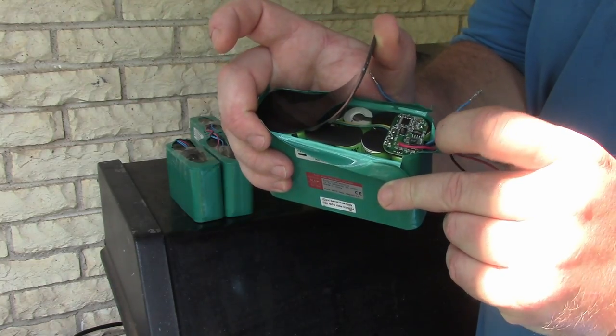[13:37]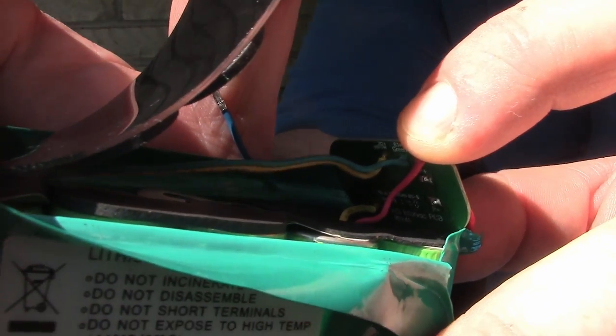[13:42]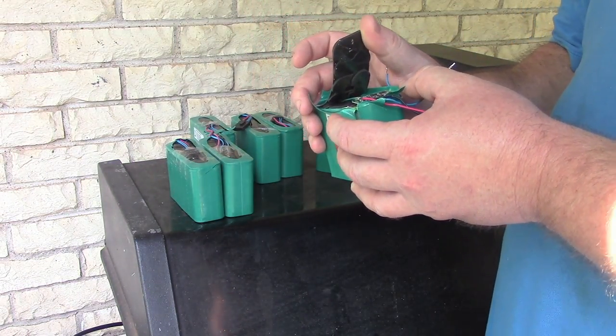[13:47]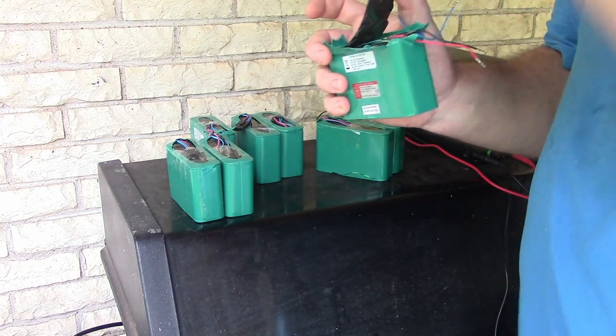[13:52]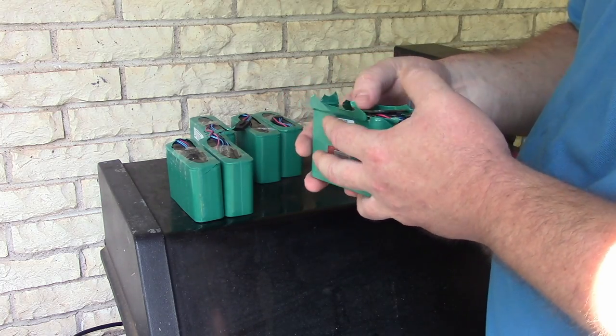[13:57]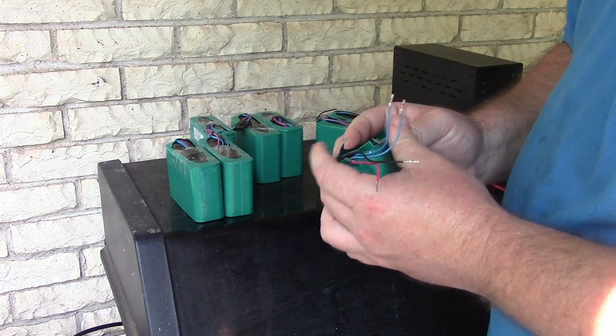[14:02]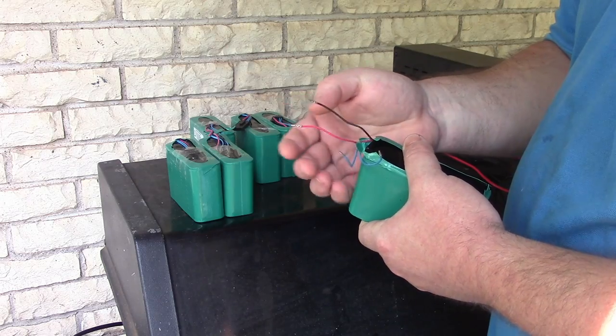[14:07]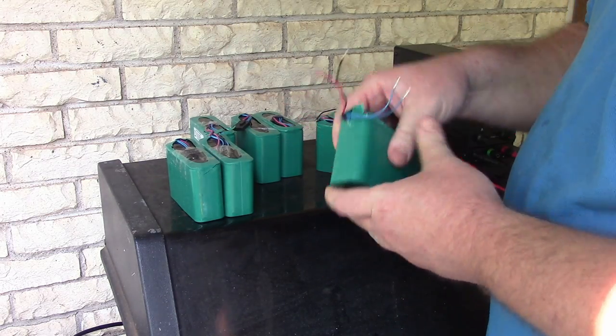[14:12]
I tried to look this up, and the only thing I could really find is on the back side of the BMS. There's some writing, and when you look that up, it shows some sort of vacuum medical device, I guess, for like edema in the legs or something. I don't really know. So yeah, these are marketed by Battery Hookup as turnkey ready BMS. Just use the positive and the negative to charge and discharge it, and limit it to 3 amps per pack.
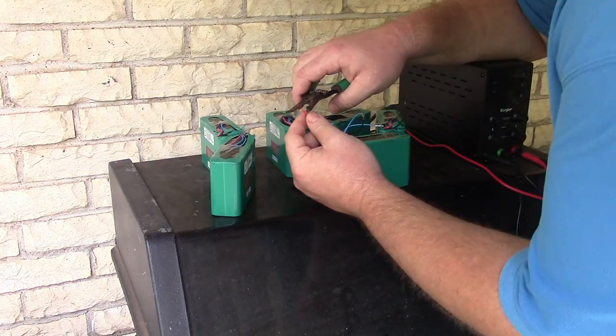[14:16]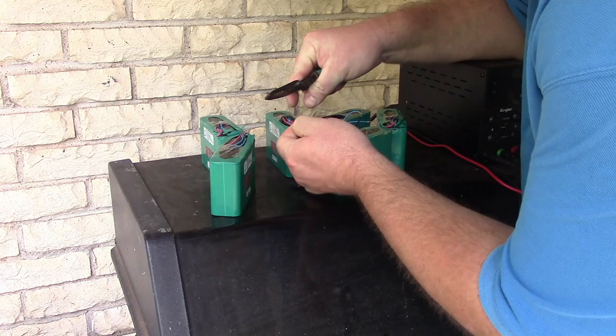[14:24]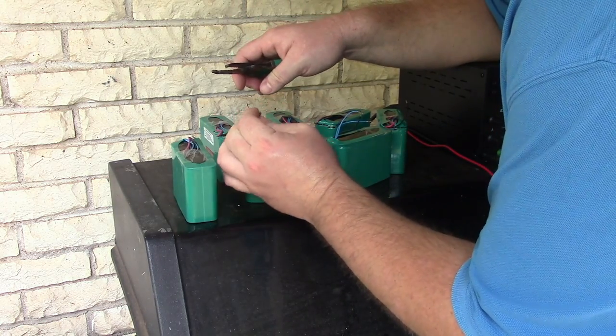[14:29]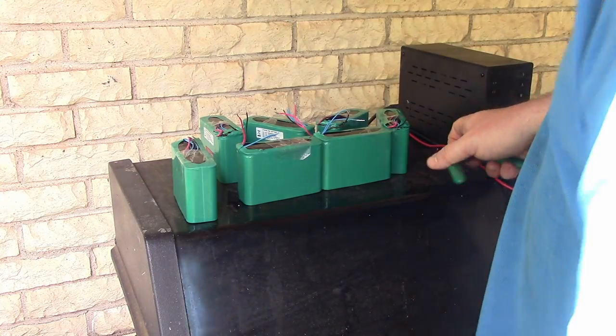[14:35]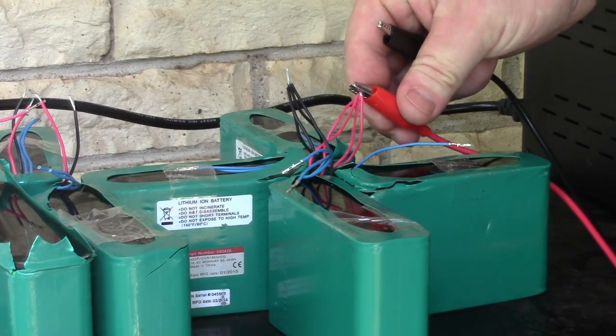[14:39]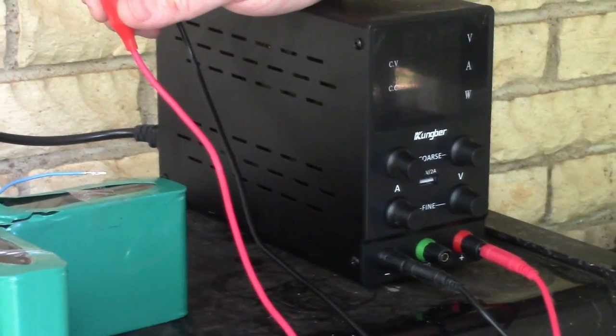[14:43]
All right, so let's just cut these. And then this one, let's see what gauge they are. Is it a 16? Nope. Is it an 18? Okay, 18 gauge wire. I'm just gonna strip a little bit off of these so I can try charging them up. Okay, so that's all the connectors gone. So I got these ready to go. I'm gonna set my voltage limit real quick.
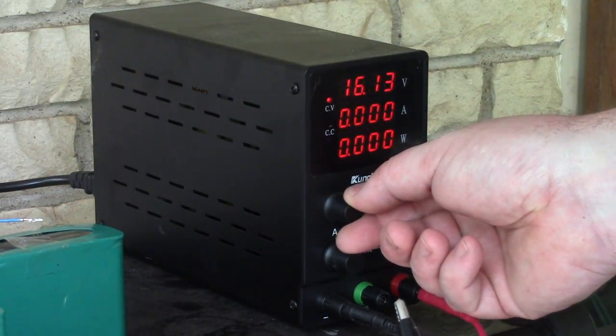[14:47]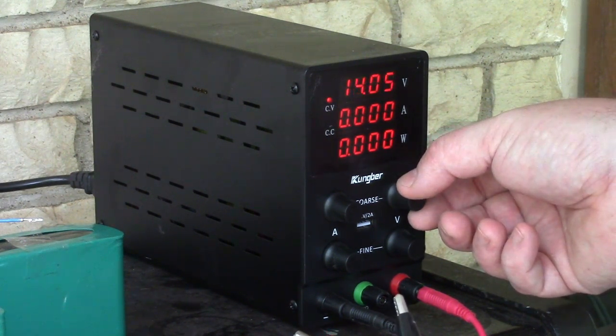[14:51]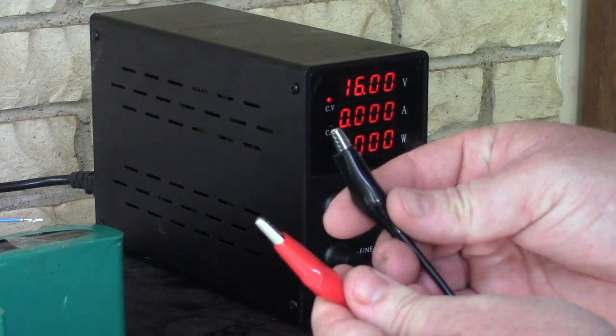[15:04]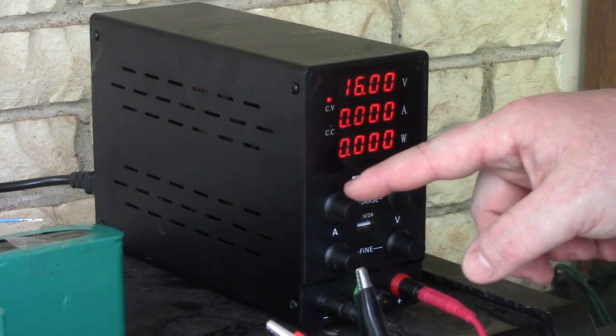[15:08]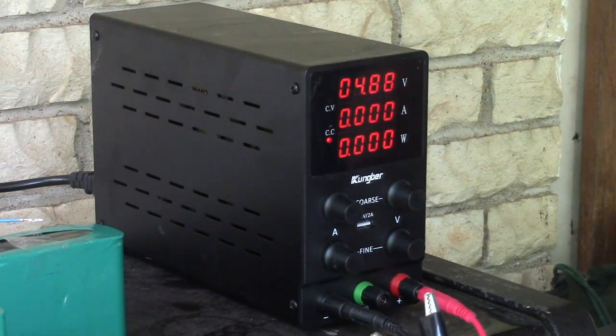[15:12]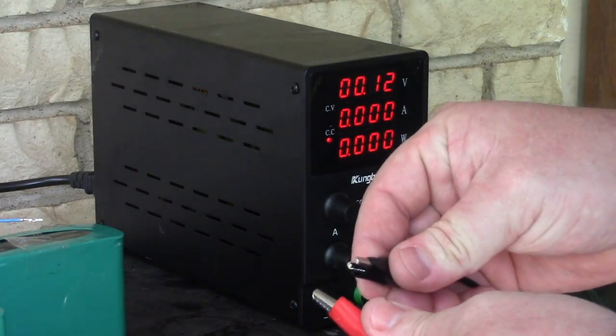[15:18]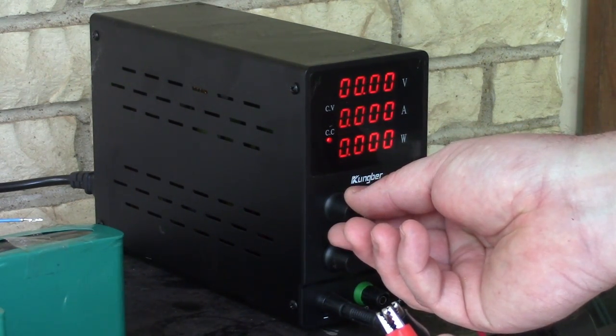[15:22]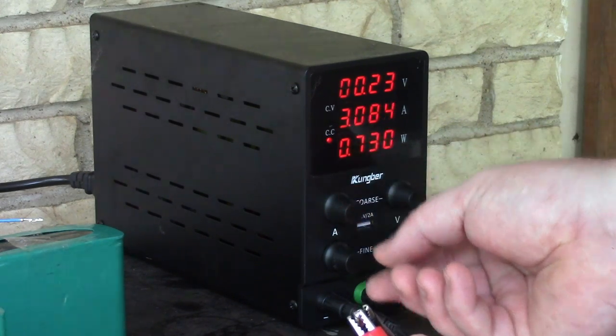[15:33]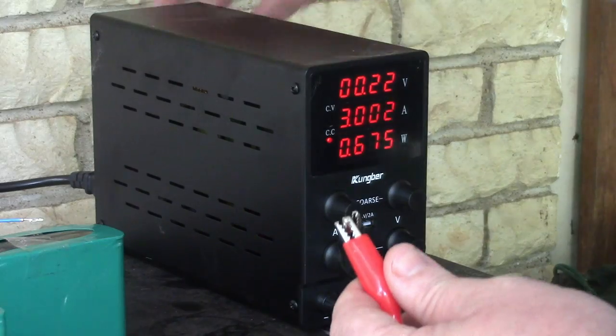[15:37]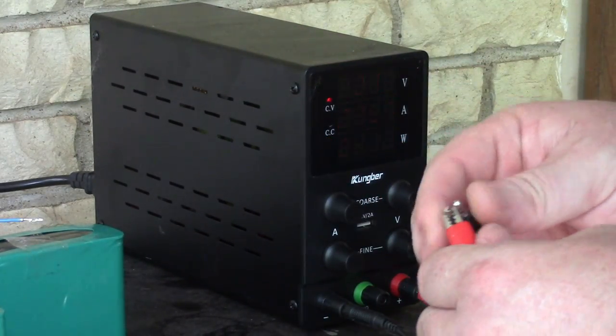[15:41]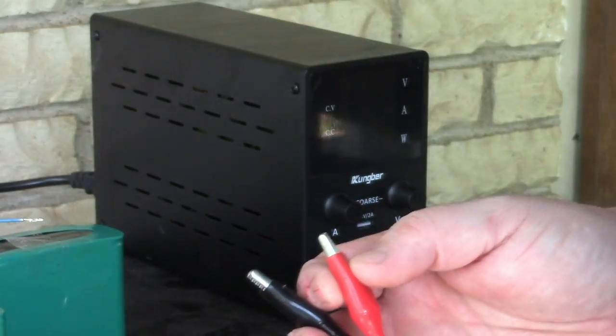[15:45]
Okay, so we can set the voltage like that with these disconnected. We got the voltage. I'm going to set it to 16 volts for now. Now let's turn down the amps, and then to set the amperage, I'm going to connect it. Then I'm going to set the amps to, let's start off low. Let's just start off at 3 for these 4 packs. There's 3 amps. Okay. Let me turn that off.
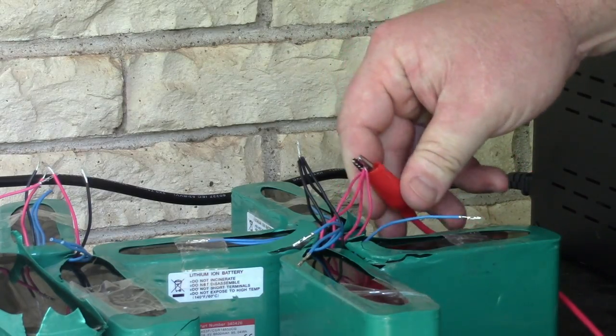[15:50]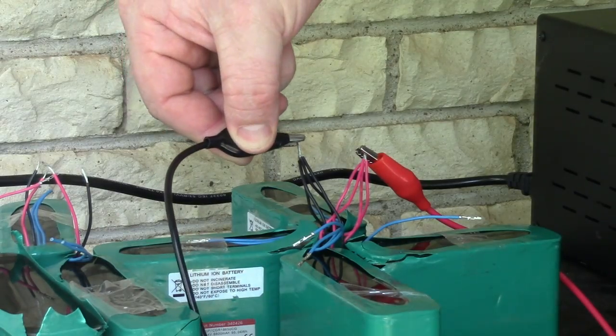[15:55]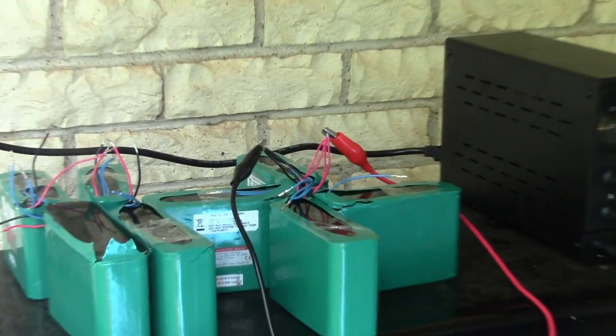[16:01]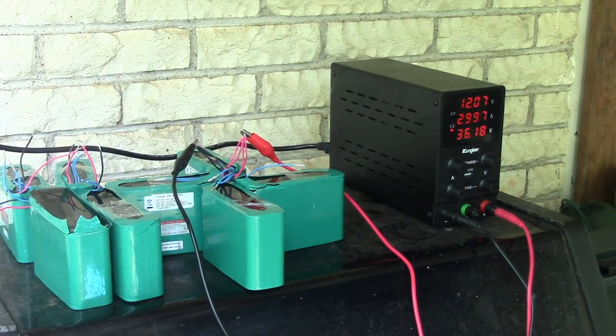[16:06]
So now, I'm going to hook up my positives here. I'm going to hook up my negative here. Ooh. Let's turn this on. Should be set. So we're doing constant current right now, just under 3 amps, and the voltage is going up. So we're charging. So we have our constant current and our constant voltage set. That's going to be pretty sweet.
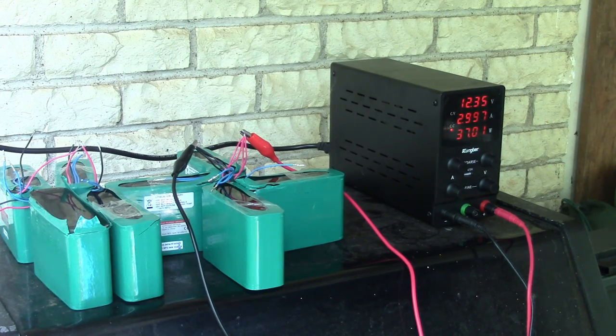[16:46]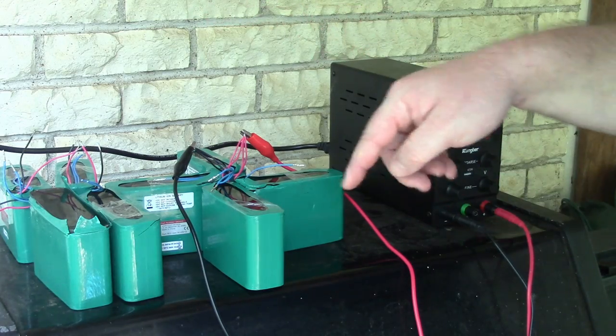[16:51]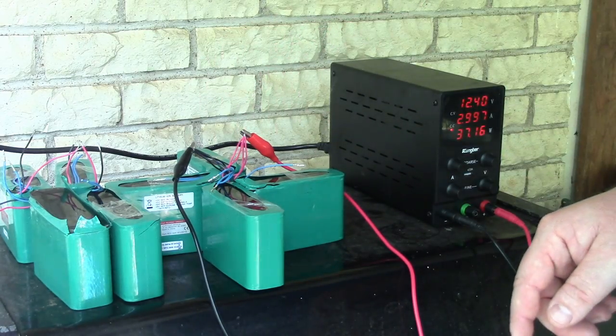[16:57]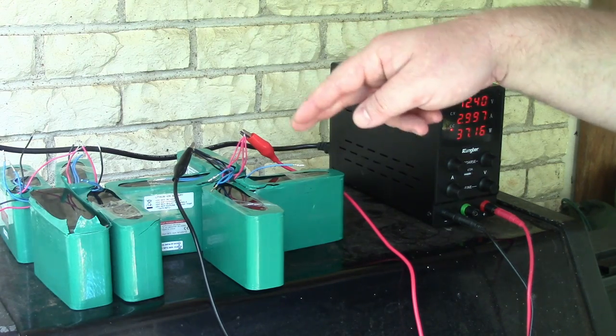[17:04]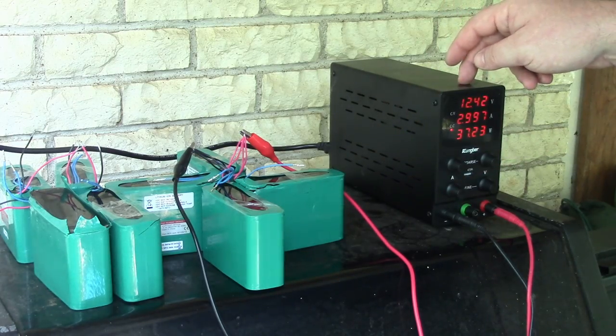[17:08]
And I guess this is just going to take an eternity. So for this first charge, what I've been doing with my batteries is I've been taking it pretty easy to begin with, right? And then as the voltage goes up, I'm going to go ahead and crank up the amps a little higher. Because in theory, since all these are in parallel, we have 4, it'd be 3 amps each, 12 total. And this thing can only put out 10 amps, so we can't overpower the charge amps with this device. And these individual cells, they can take a whole lot more charge than that, but this is what the BMS will limit.
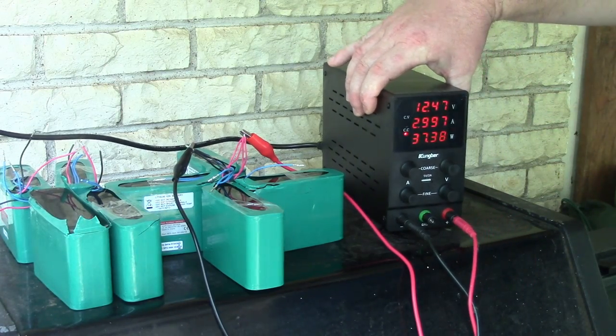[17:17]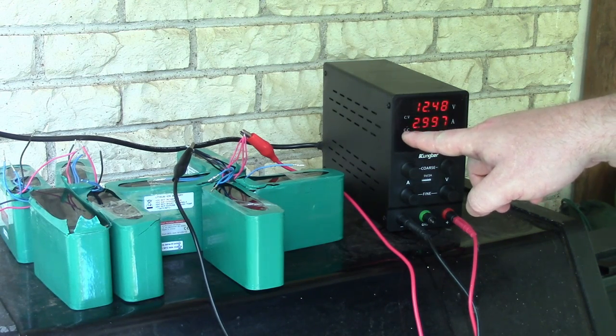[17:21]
So as we watch this charge, what we're going to see is it's going to maintain a constant current, the amperage. It'll just be a flat line of amperage, but the voltage is going to slowly creep up.
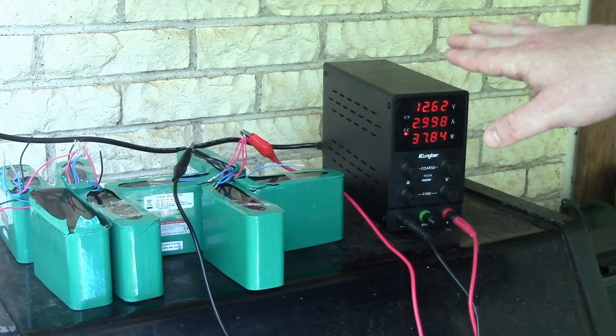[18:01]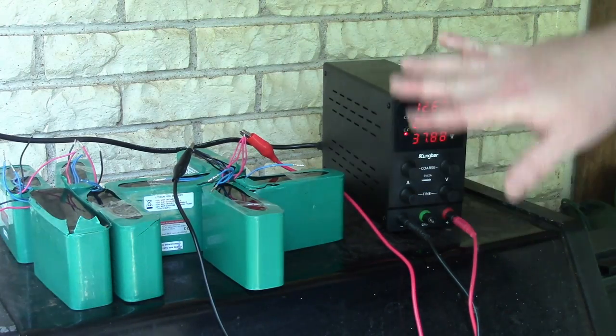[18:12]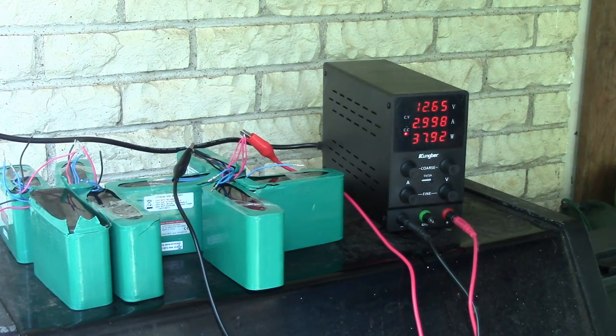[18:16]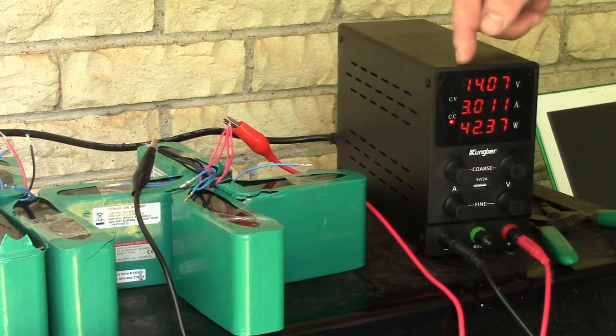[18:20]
So when you charge lithium ions, you want a constant voltage and a constant current charge pattern, and these power supplies will allow you to do that. So we'll check in with this later. Okay, so the voltage has gone up to 14.07, so I'm going to go ahead and just raise the amperage up now. See if we can get a little quicker charge. I'm just going to go up to 6, I guess. Why not?
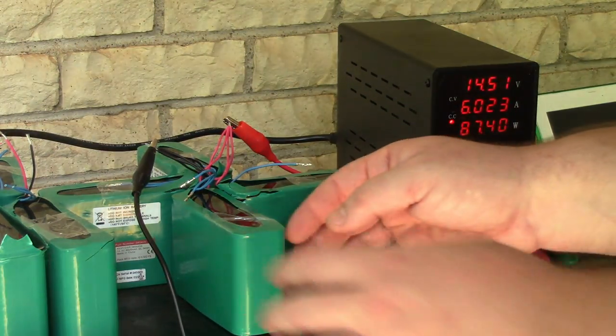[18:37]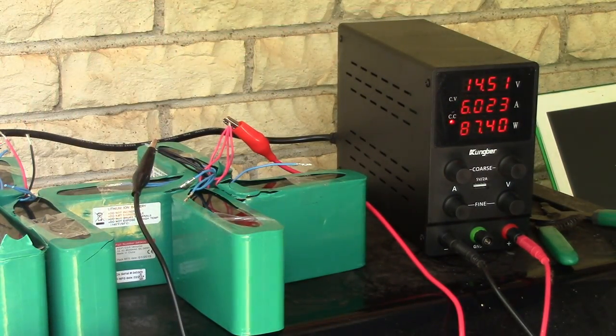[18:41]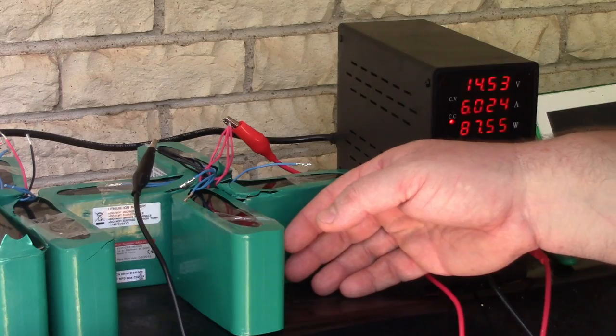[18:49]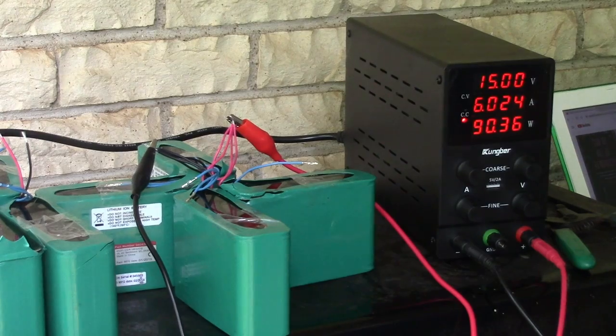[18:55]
I'm just being careful because it's the first charge of these packs, and I don't know anything about them. They're still ice cold. This is very low charge for what these cells can actually handle, but you know, just being cautious. I'm doing it outside in case they decide to go up on me. All right, there's a lot of background noise, sorry about that.
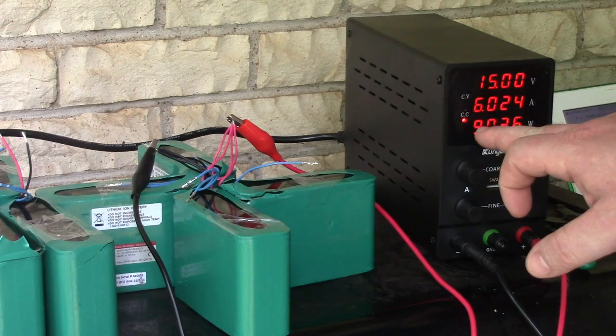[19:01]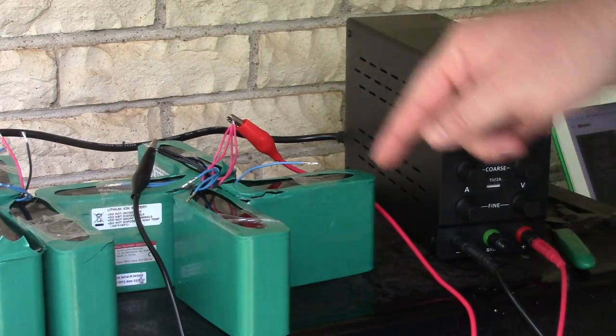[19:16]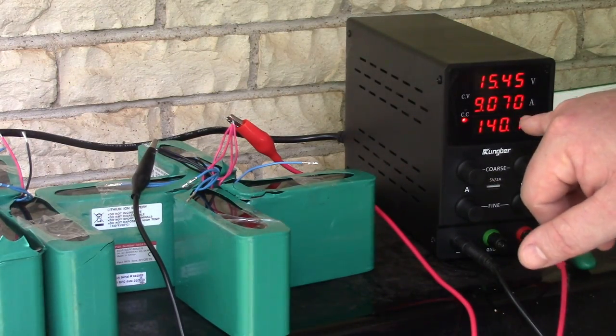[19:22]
But we just reached 15 volts, and we're still on the constant current of 6 amps. I'm gonna go ahead and crank up the amps a bit more so this doesn't take all day. I'm just gonna go to 9. So we're at 9 amps, and we have 4 batteries charging at once, so in theory we are still safe. But once this reaches 16 volts or whatever I set it at, that light's going to switch to constant voltage, okay? And then the voltage will stay steady, and the current, the amps will start to drop.
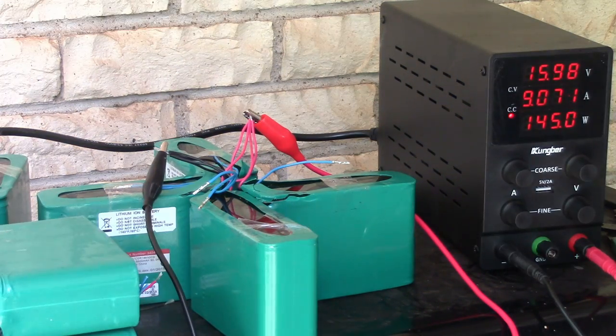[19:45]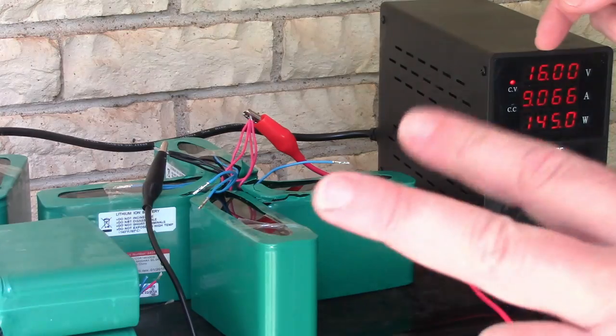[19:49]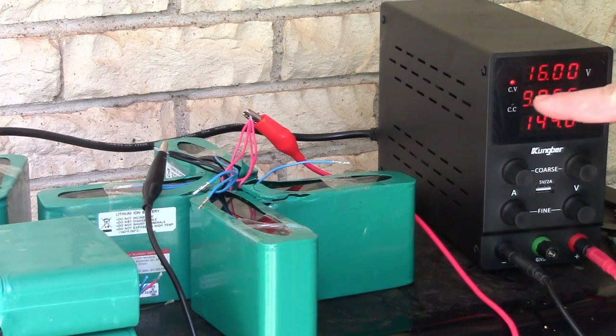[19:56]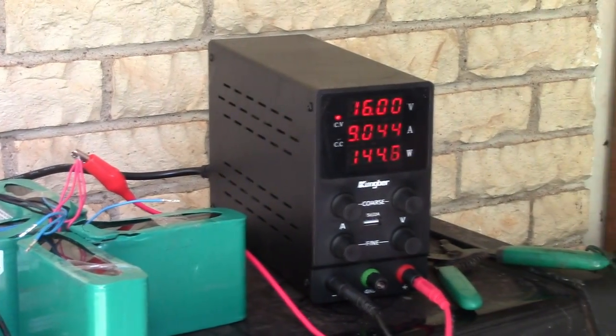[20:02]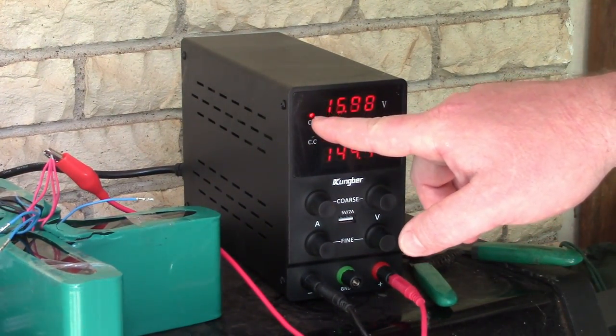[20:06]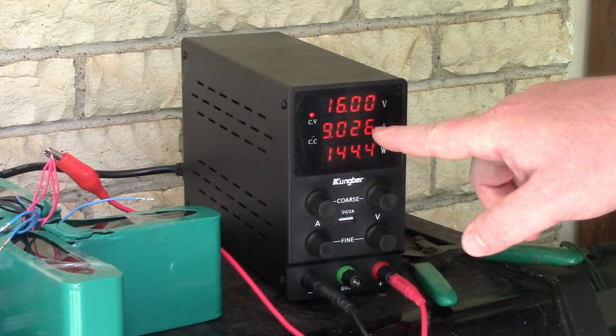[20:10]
All right, we've been charging for a while now. I think about 2 hours, and we've just now reached 16 volts. See that? Now the light has switched to the constant voltage. I'll just center that for you so you really see it. So at 16 volts, we switched to constant voltage, and you can see the amps are starting to go down.
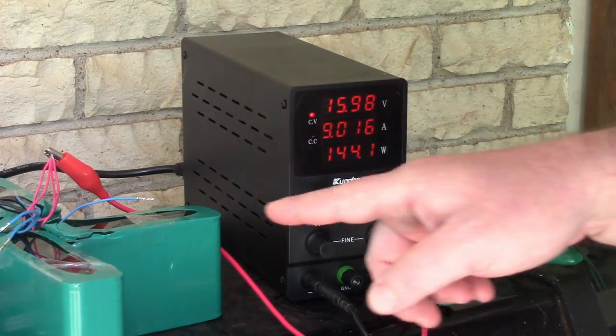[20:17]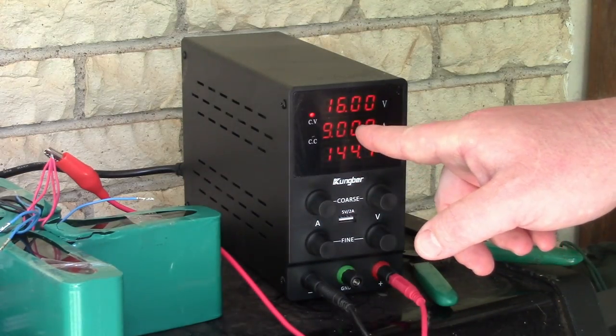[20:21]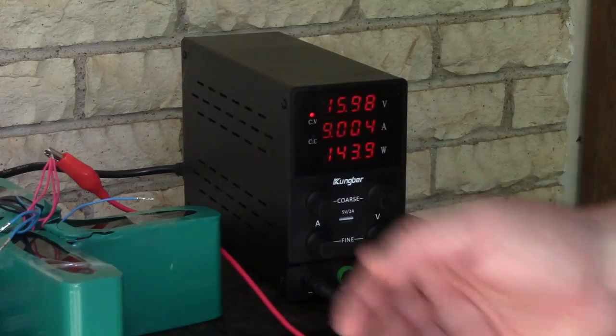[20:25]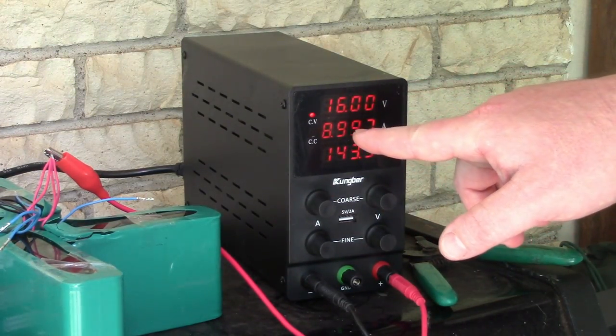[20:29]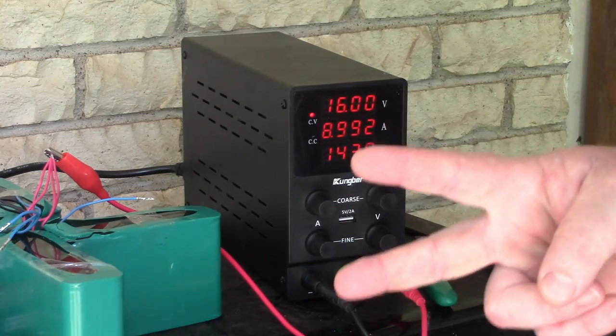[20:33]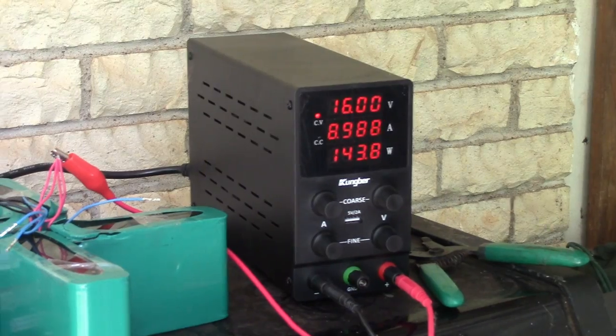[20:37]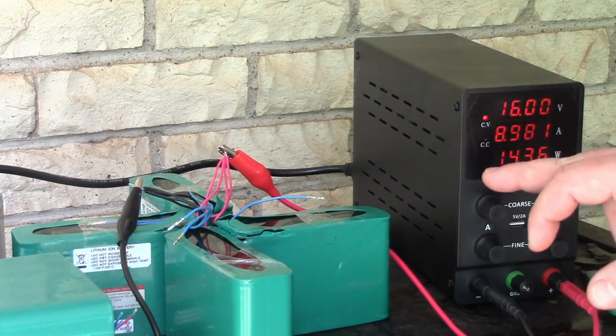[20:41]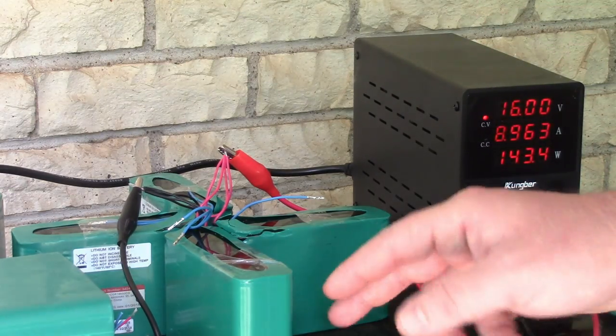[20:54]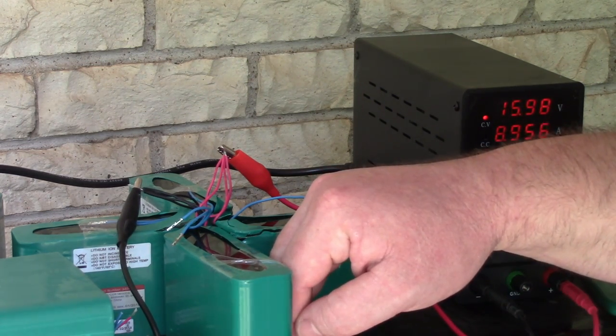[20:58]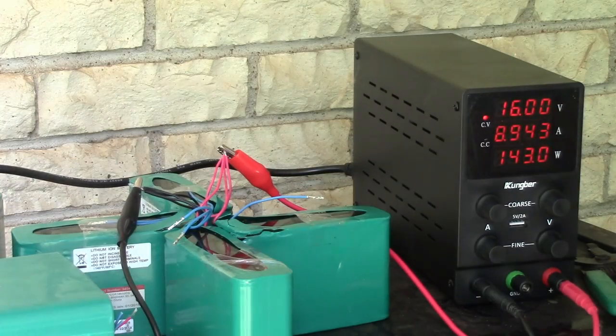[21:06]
So now that we've reached our constant voltage, what's happening to the batteries is we're seeing some resistance to how much current they will accept. So we're already down to below 9 amps, and that'll continue to go down. So we've been charging 2 hours, but we are at the long stage of the charge now. Reaching the voltage is the quick part, and then the amps trickling down to pretty low, 100 milliamps or something, that's the long part. So these batteries are warm to the touch, a little above body temperature, above the ambient temperature outside because we're in Texas, but they're not hot.
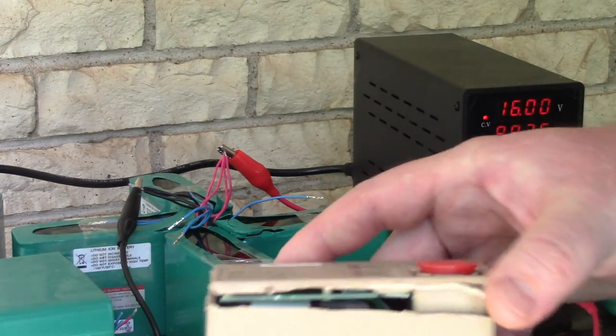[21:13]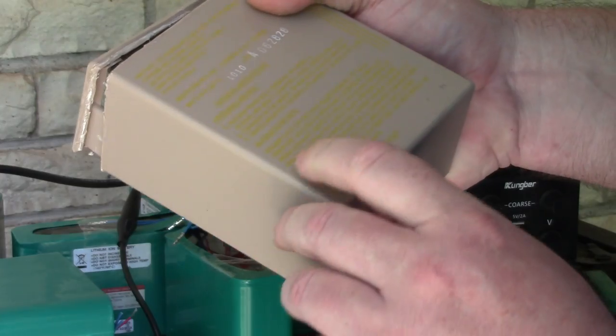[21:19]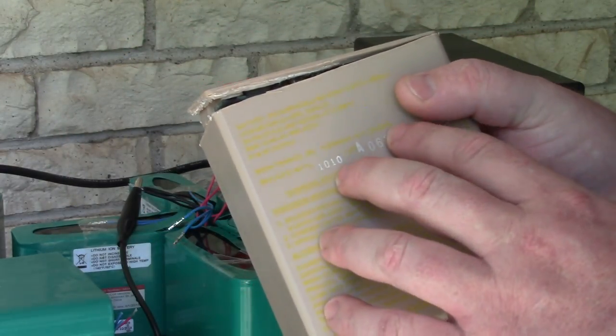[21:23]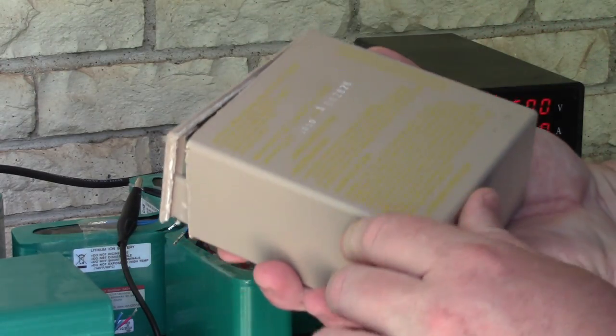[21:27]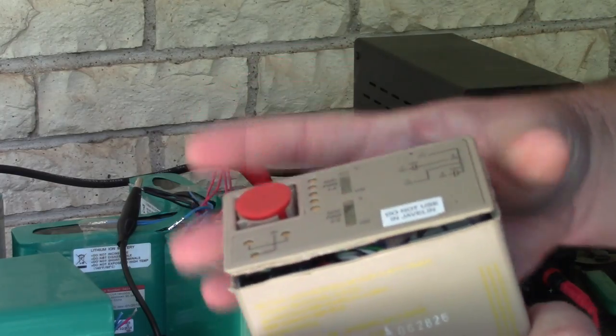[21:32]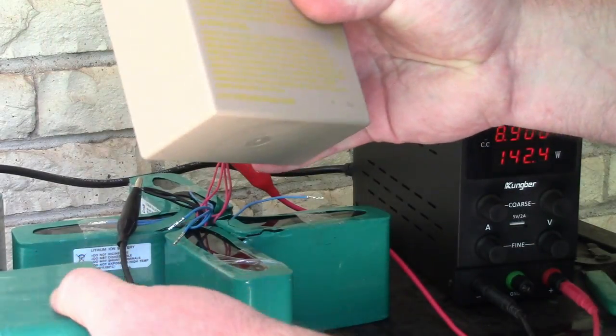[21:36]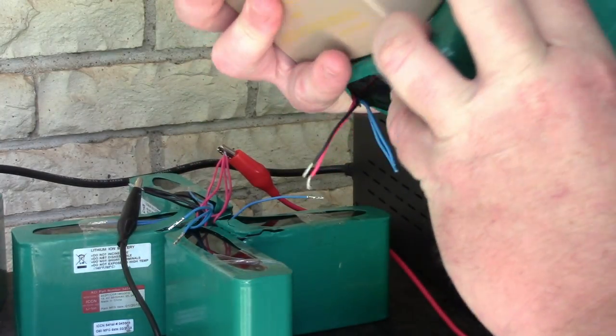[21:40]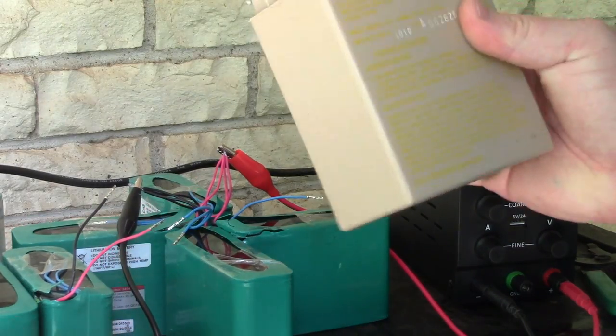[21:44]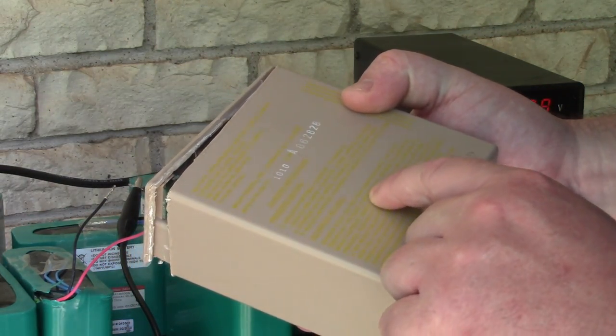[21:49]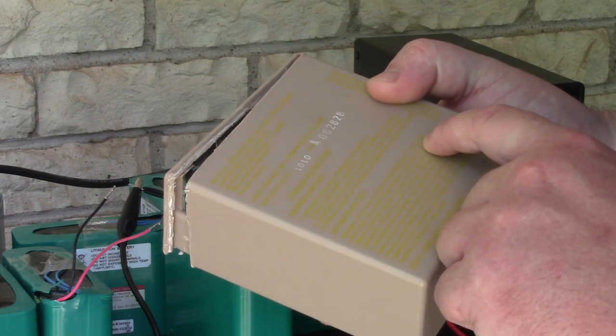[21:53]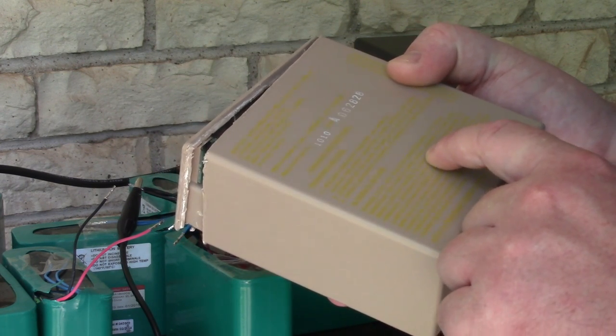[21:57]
Let me show you one thing. On my e-bike build, I used these other cells from Battery Hookup, and they have charge instructions. So this is also a 4S 3P battery pack here, okay? Except there's two sets of 4S 3P in each pack. There's two of these and one of these. But charge each 12 volt section independently at 16.5 volts, constant voltage, and 3 amps max. Charge is complete when current drops to 100 milliamps.
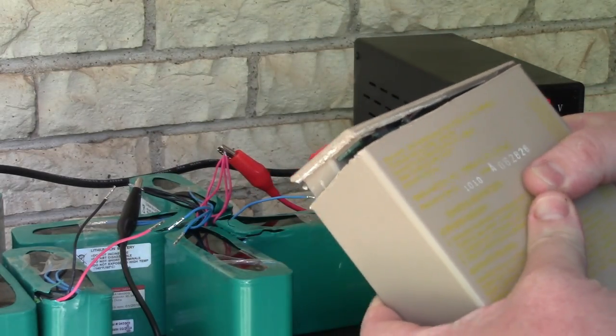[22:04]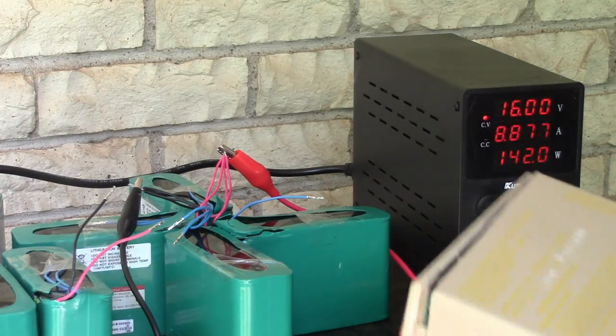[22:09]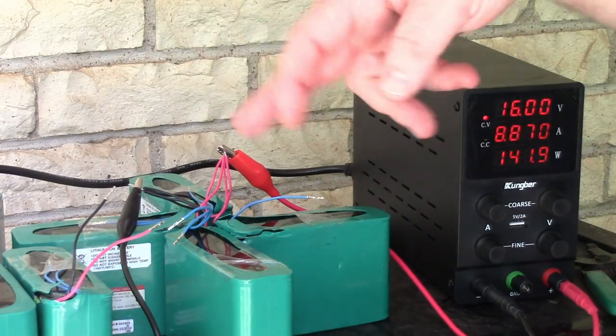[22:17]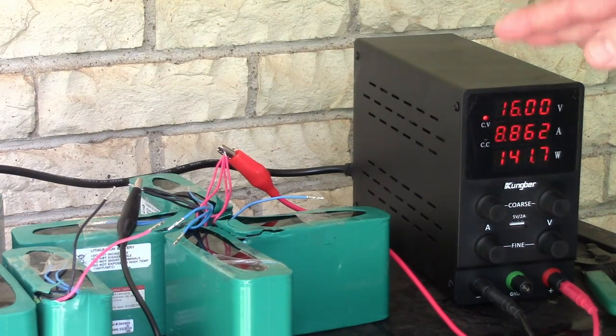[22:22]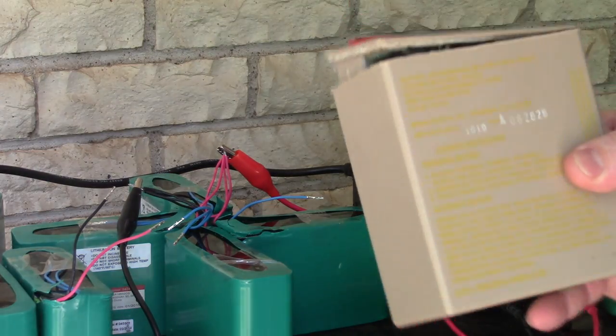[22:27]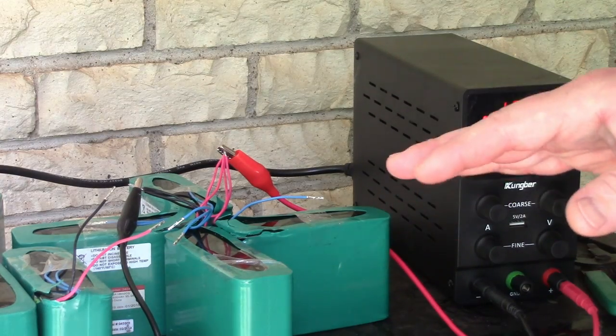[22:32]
So we can follow similar rules to this, except I'm only going to 16 volts on these batteries. But when that trickles down to half an amp or something, we can assume that these four packs are about fully charged at 16 volts. I mean, you can go up to 16.8, which is a full charge. 16.5, like what this pack recommends, is a slight undercharge. And when you undercharge a lithium-ion battery, it's supposed to last a little bit longer. So we're just going to let it do its thing. We'll see how long it takes.
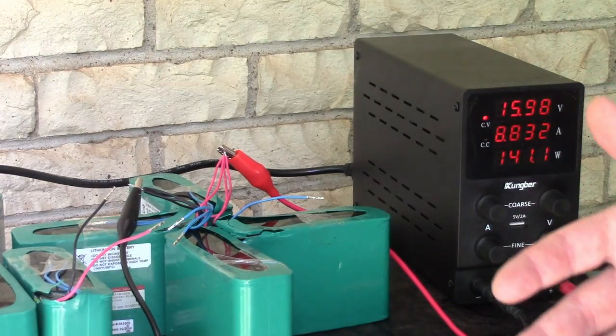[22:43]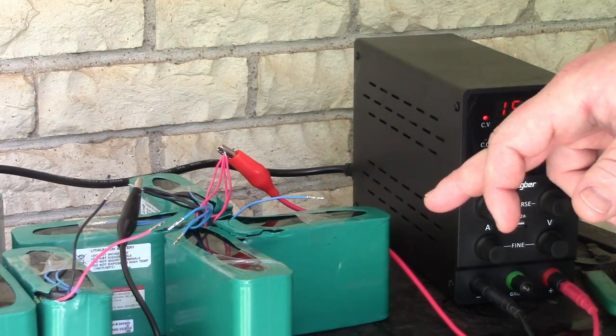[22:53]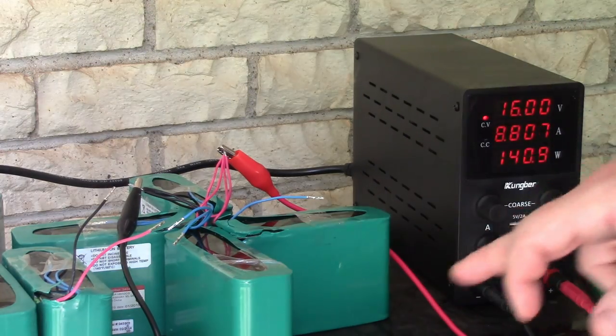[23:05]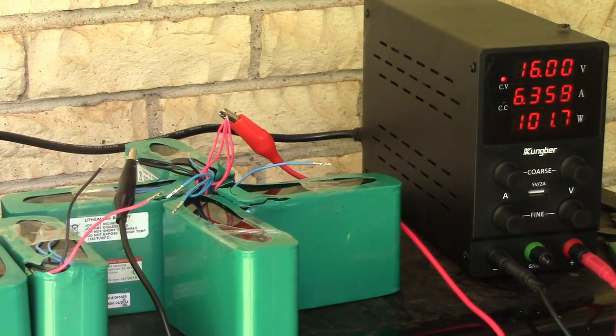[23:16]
In theory, the longer it takes to charge, the healthier the batteries are, right? So if we're putting in 140 watts, and each one of these has nearly 100 watt-hour capacity, you would assume that the total charge cycle, if you maintain that, is a few hours, right? But to get that last bit in takes extra long, because they just take less and less current as they get full. All right, we're right at 2 hours and 40 minutes in since starting the charge. The amperage continues to track down. It's holding 16 volts. We're down from 9 amps down to 6.34.
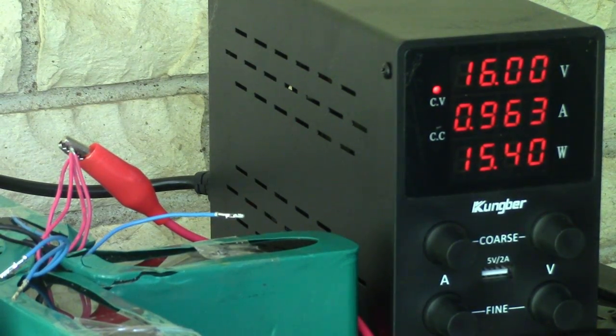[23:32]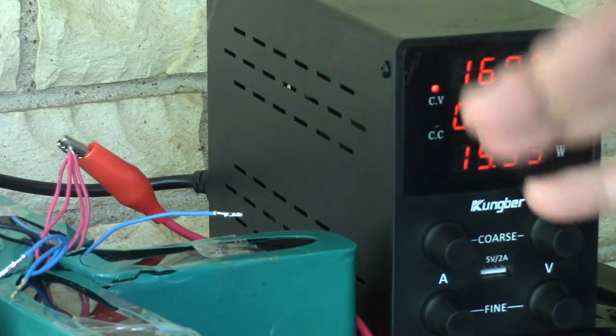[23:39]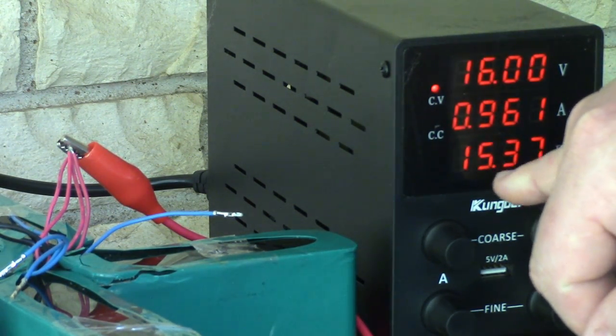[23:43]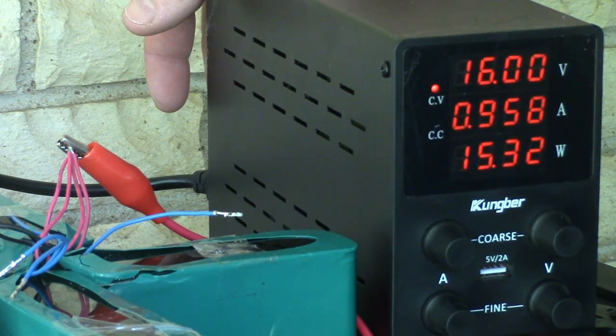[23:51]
All right, it's been about 5 hours and 10 minutes. The amperage is below 1 amp. I could go further, but look how much is going in now. 15 watts is all that's going into these four packs. So I'm just going to call it quits here and charge the other pack.
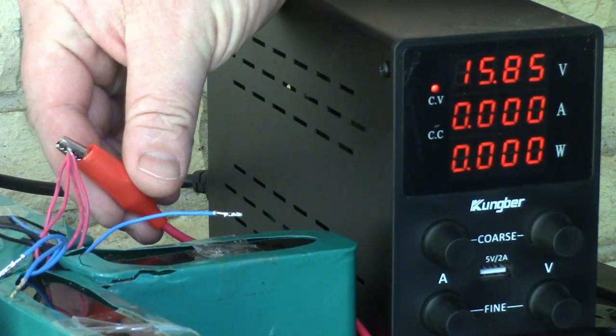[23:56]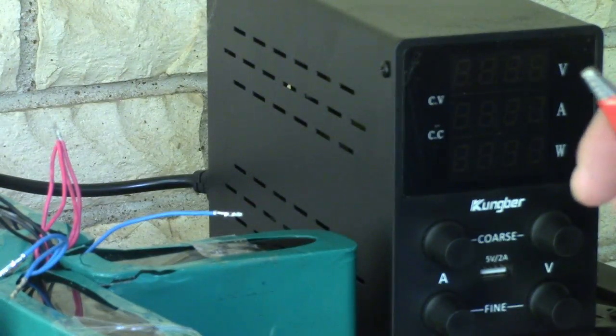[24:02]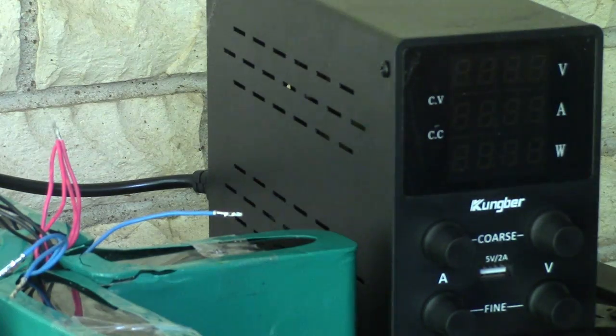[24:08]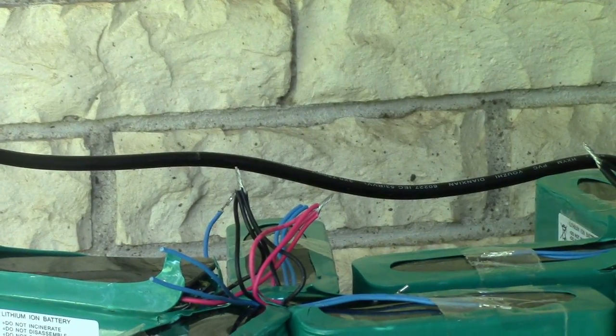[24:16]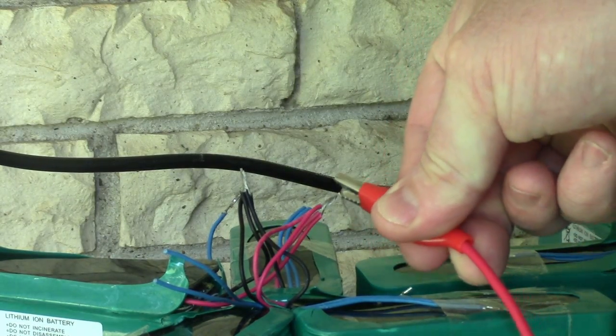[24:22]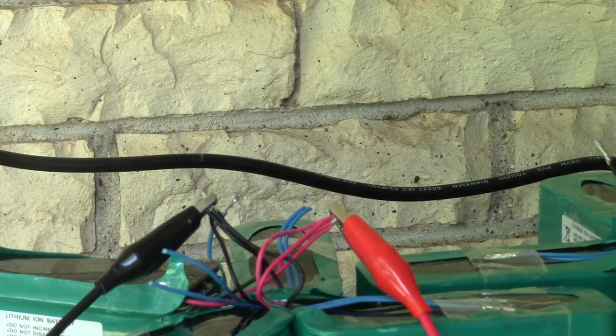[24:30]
I'm going to turn this off and disconnect it. I'm going to go ahead and take my amperage and just turn that off for now. And we'll do it again to the other pack. Boom, I got that one ready to go. So we'll do positive. I'll make sure I pinch a bunch of them. Positive. We'll come in from the other side with the negative. Keep those separated. Let's zoom out.
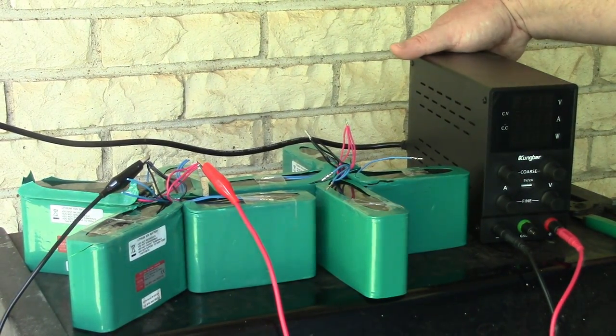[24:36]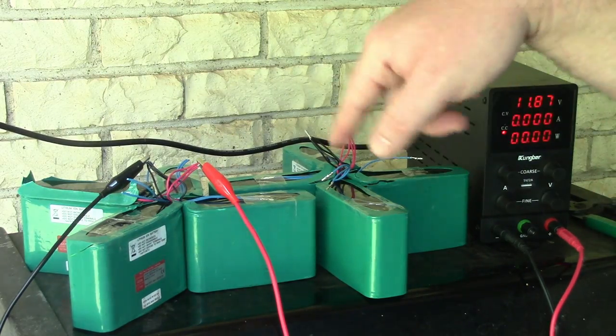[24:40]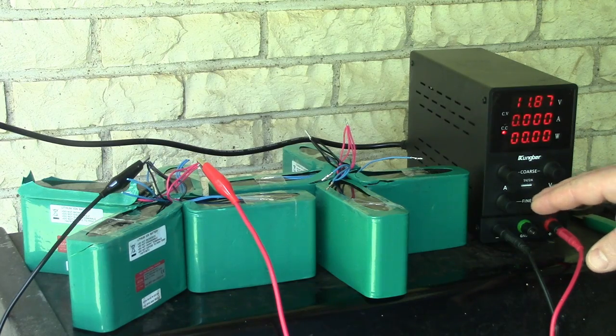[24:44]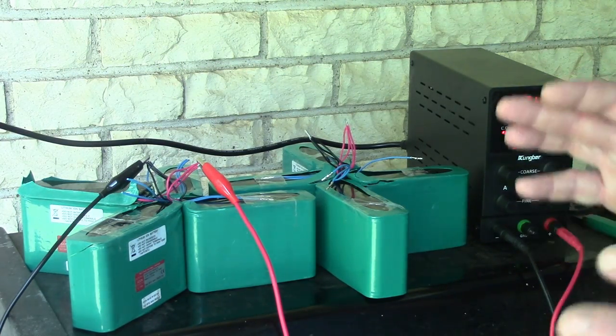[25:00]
I'm gonna turn this on. It's showing that these packs have 11.87 volts combined. So let's just turn the amps up a bit. Let's do kind of like we did earlier. 3 amps. But you can tell, I think that's a good sign when it takes that long to charge something, that means that it's taken a lot of charge. So these packs seem to be pretty good.
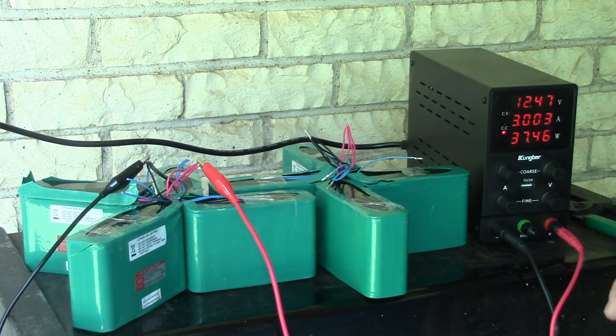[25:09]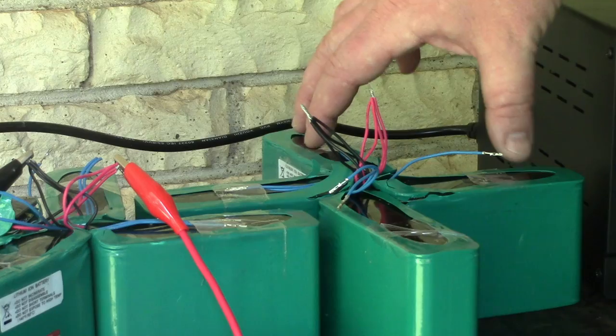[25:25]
And I'm not going to go through the whole thing again for these other four batteries, but you get the idea on how to charge lithium ions now. Constant current, constant voltage, and you just stay within the limits, and you can pick how undercharged you want it, or you can fully charge them.
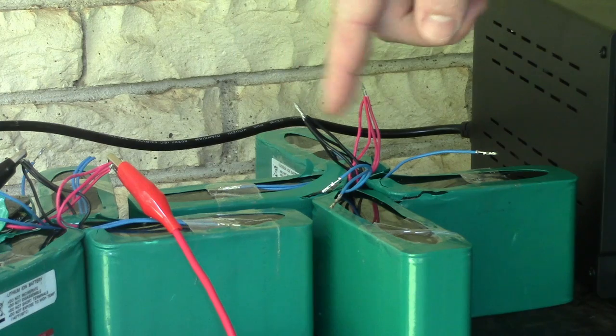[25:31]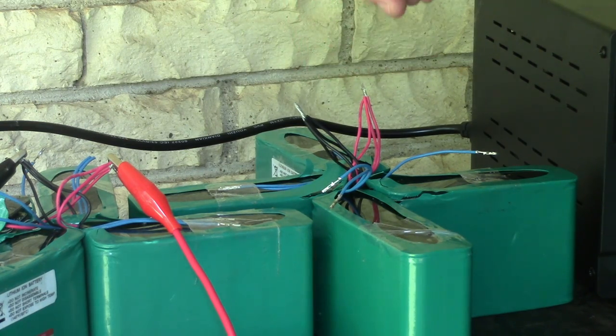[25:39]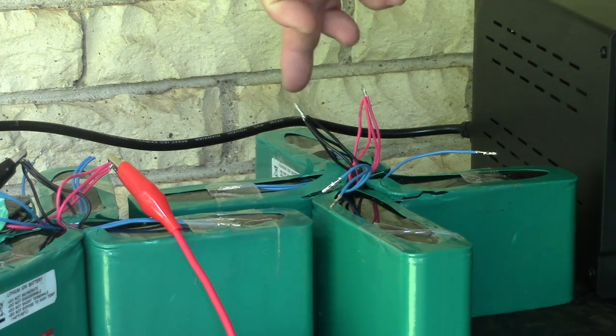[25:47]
All right, so for these first four batteries I charged, I'm just going to leave them connected for a while and let them equalize or whatever, charge each other. Maybe an hour I'll leave it like that. And then I'm going to disconnect them all. And then tomorrow I'm going to check the voltages, see if they're similar. If one is way different than the other, I think that'd be a good sign that one of these packs is bad. Just so we have one data point to work with.
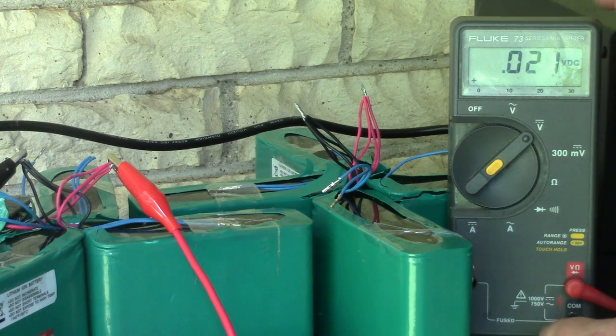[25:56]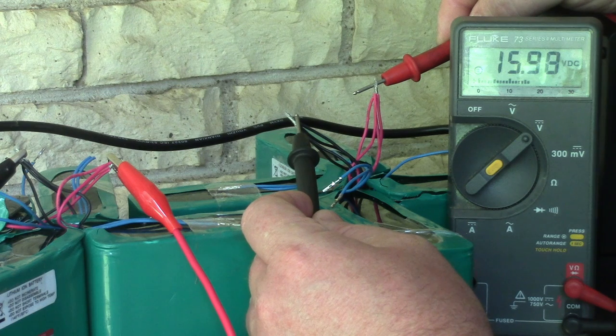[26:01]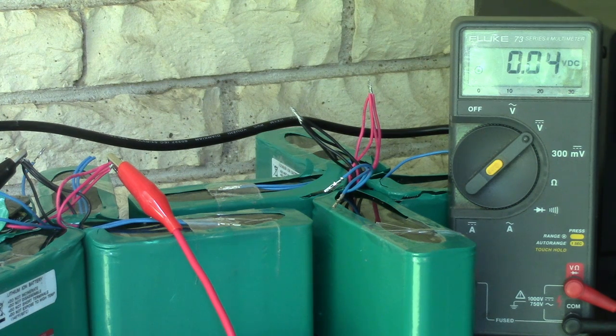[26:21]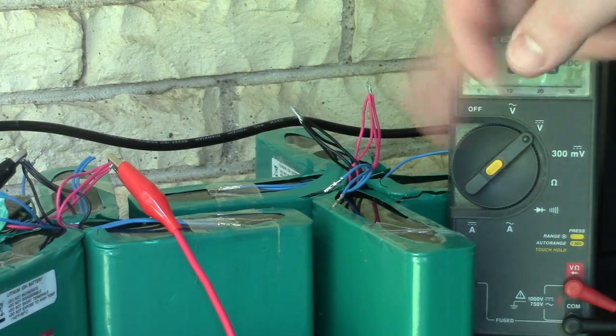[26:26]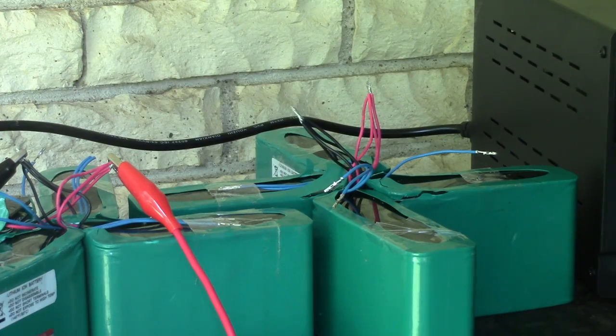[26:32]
There's my voltmeter. 15.99 volts is what we're starting at. They're dropping slightly, which is normal, I think. Everyone says that happens. Oops, if I can get a good reading. So I'm gonna let them sit like this for an hour, check the voltage, disconnect it, and see what they're doing in the morning. Because one of these could be bad. It could have a parasitic draw. It might draw the whole pack down. Who knows?
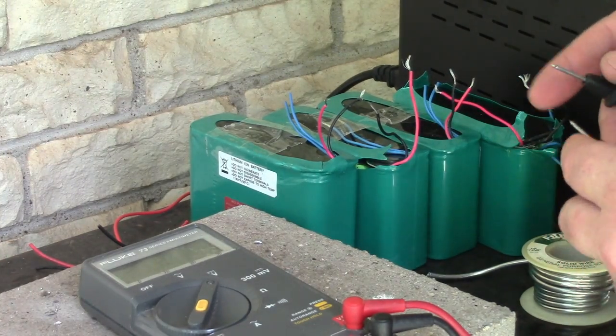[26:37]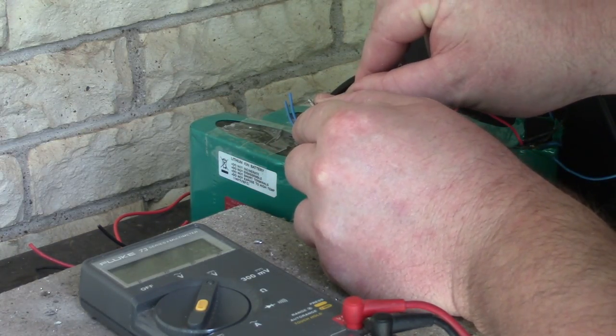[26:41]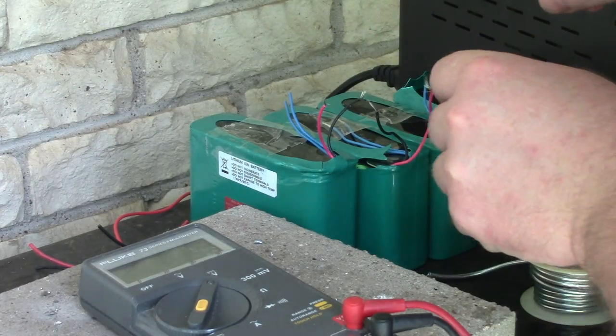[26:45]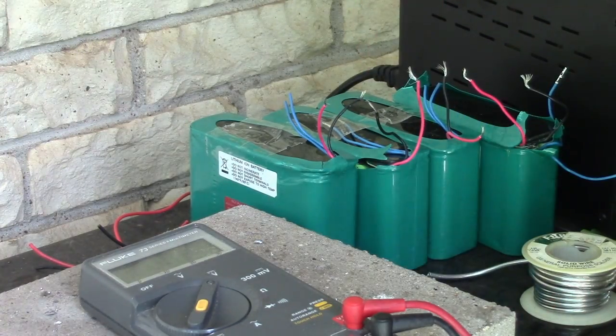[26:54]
All right, let's just check the voltage. Everything's sat for like 2 days now. So this pack is 15.88, 15.87, 15.88, 15.89. So they're all very close. That's a good sign. So I'm just going to assemble them.
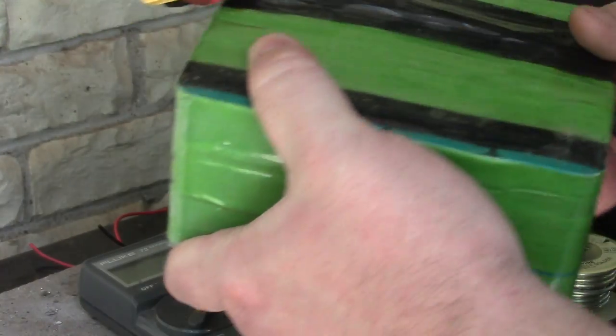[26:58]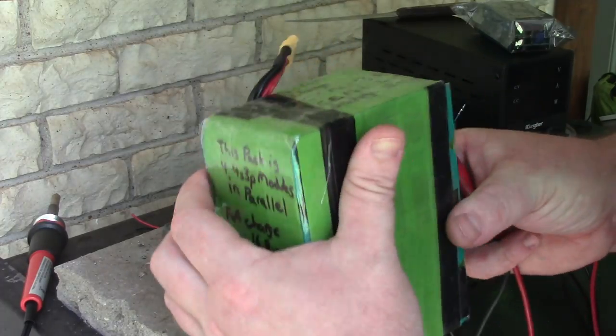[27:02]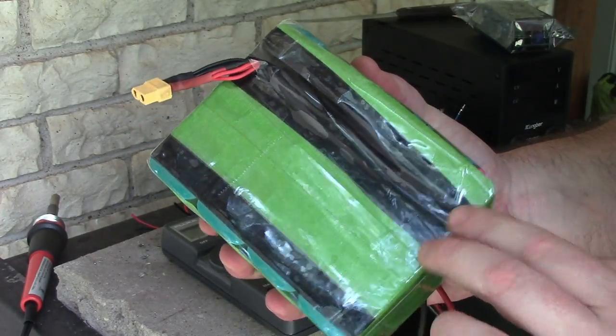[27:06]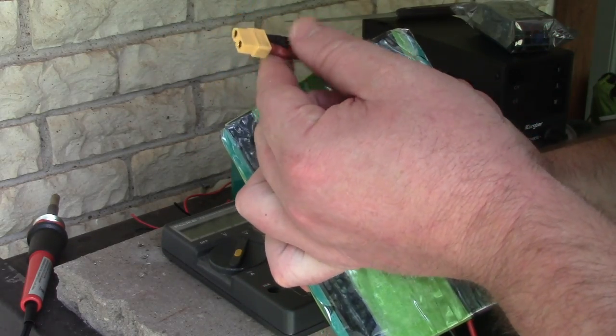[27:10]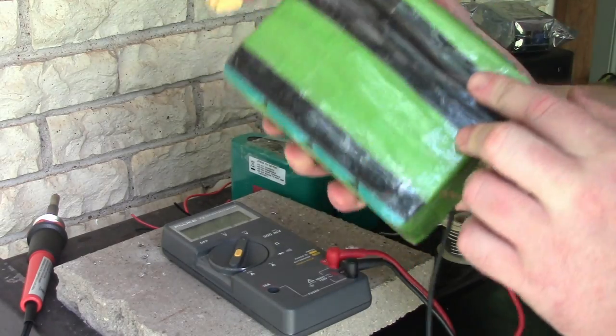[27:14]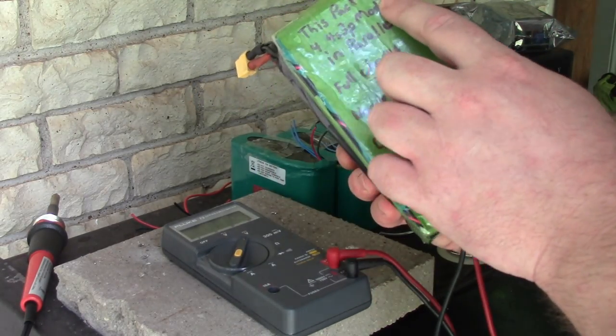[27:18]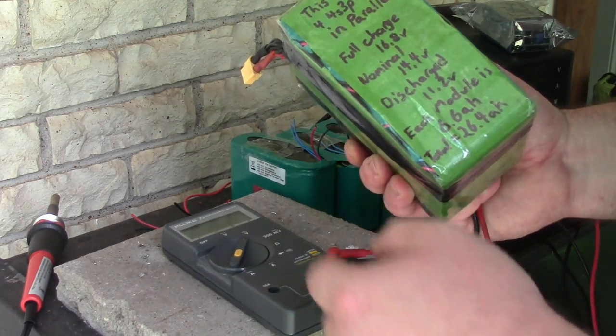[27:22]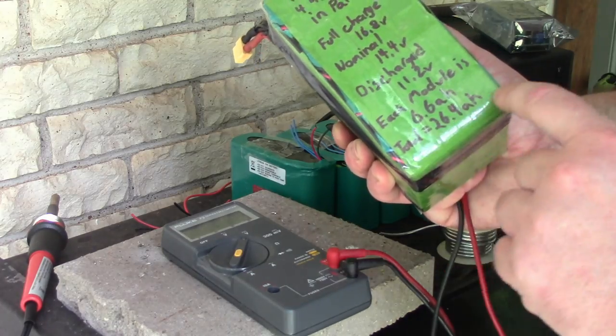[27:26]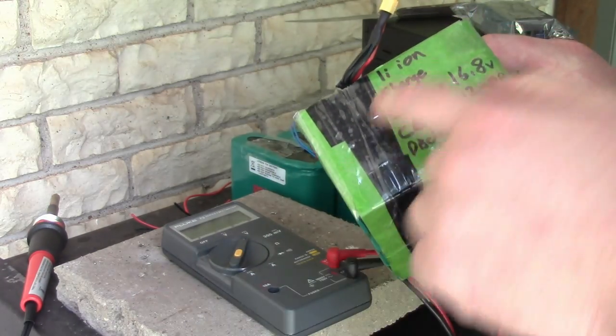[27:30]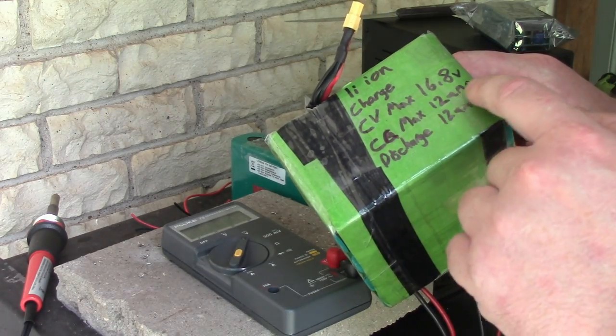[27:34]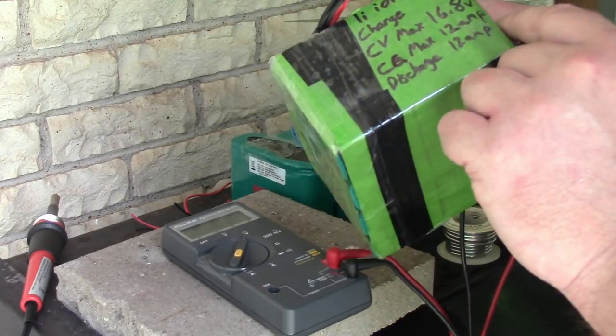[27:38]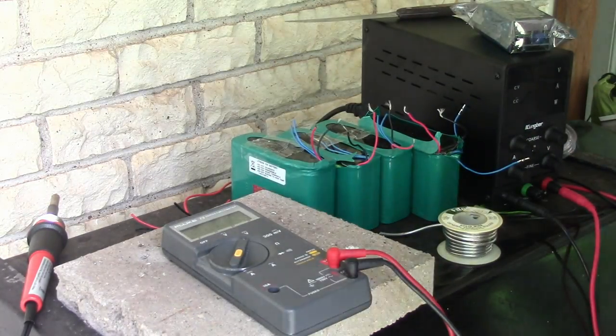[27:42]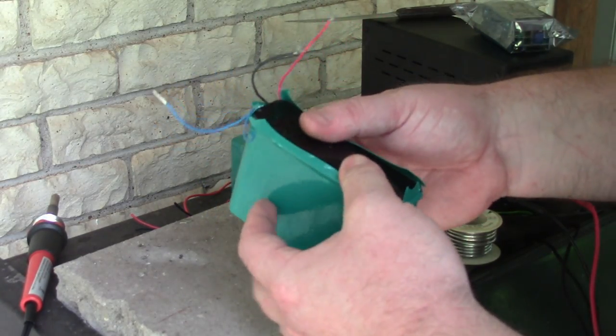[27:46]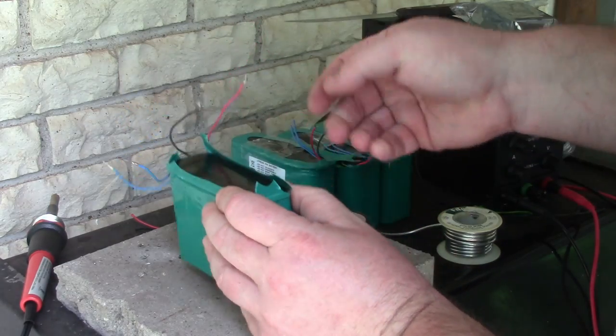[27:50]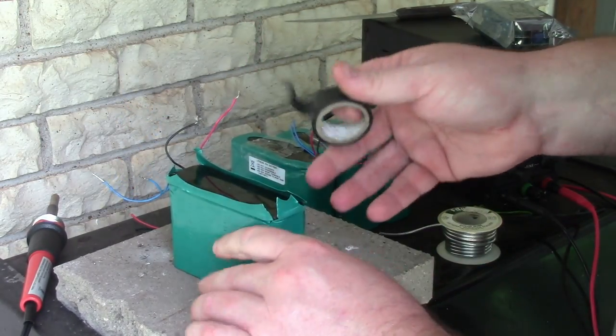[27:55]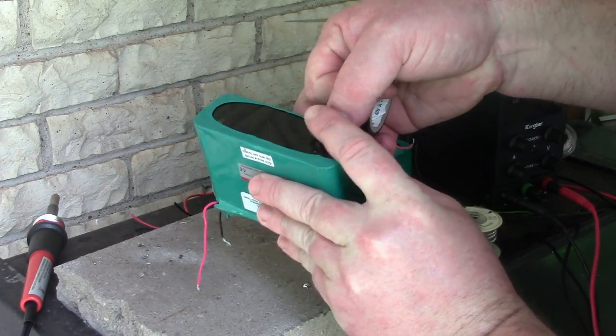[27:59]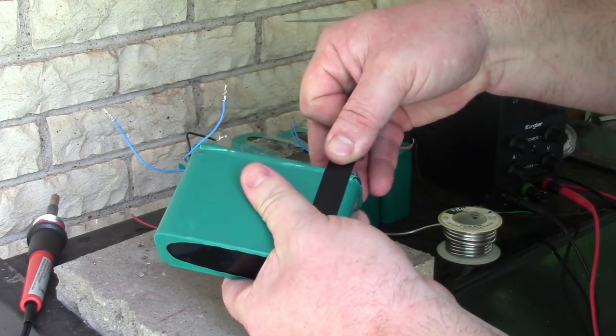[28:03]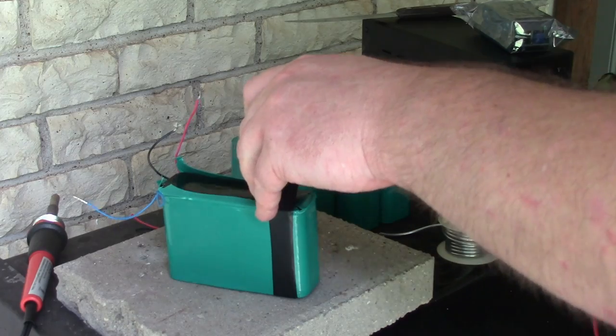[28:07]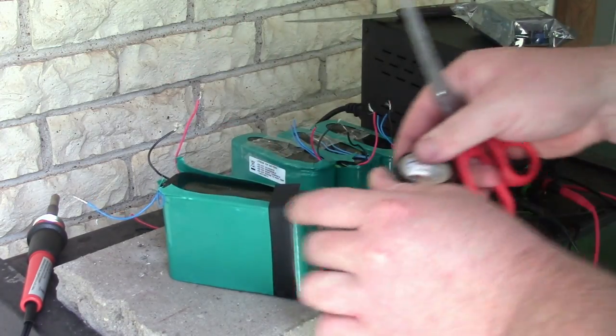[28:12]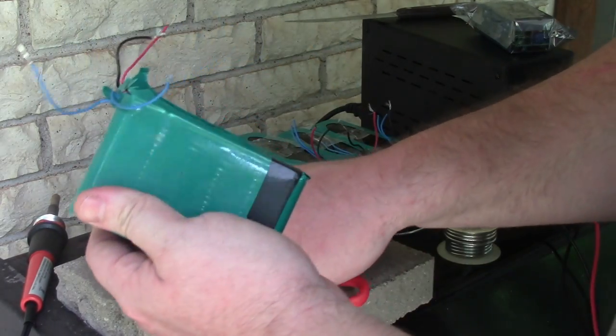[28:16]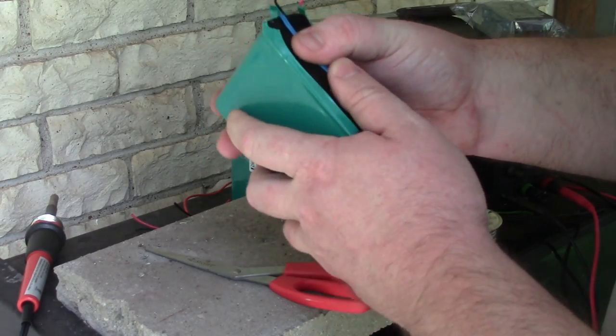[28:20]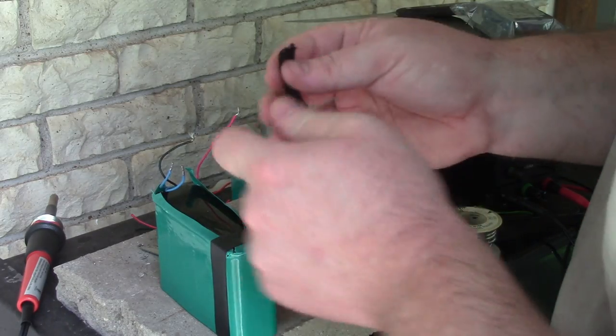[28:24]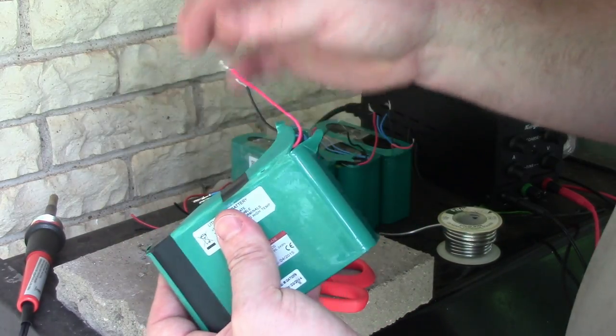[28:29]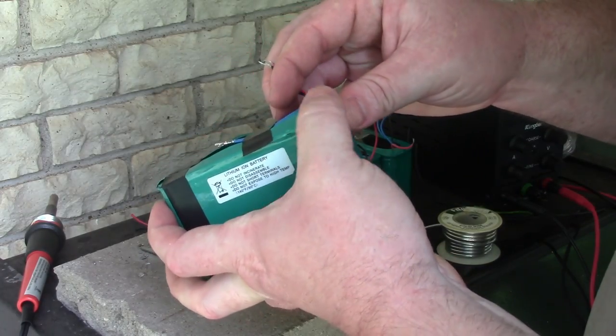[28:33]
So first thing that I need to do, I need to sort of patch this thing back up that I tore apart. I'm just gonna start on the bottom here. I'm going to go with some electrical tape. I'll get it sort of stretched out tight. I've been using scissors instead of stretching it apart, just so it looks a little more like it's going to hold together. Okay, so these thermistors, I don't really need those. Let me just get a little piece of that. Let's hold it down. Now these positive and negatives, I'm going to do a similar maneuver with those.
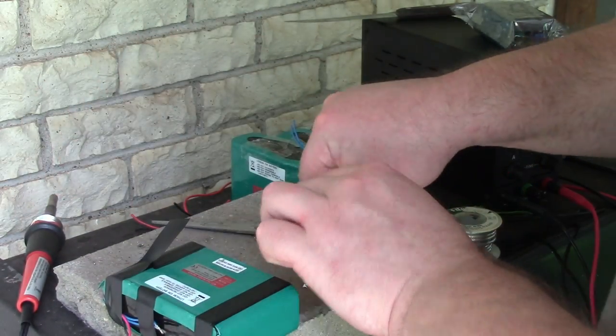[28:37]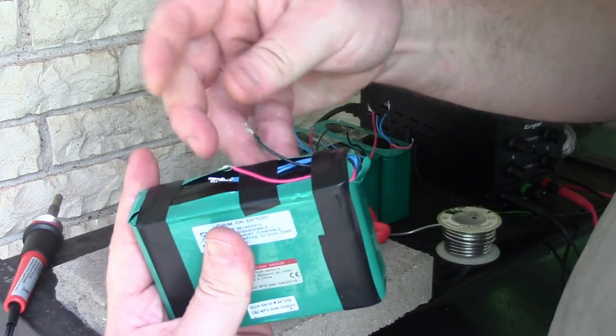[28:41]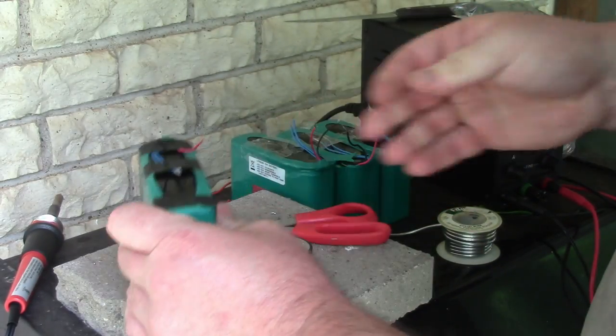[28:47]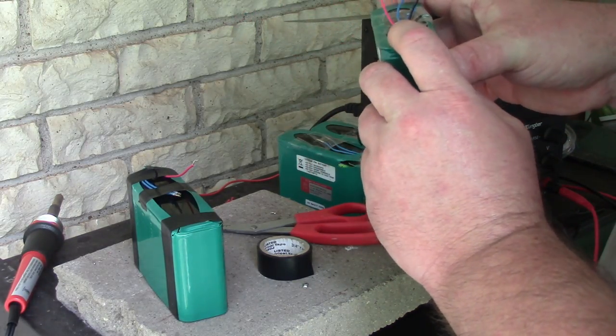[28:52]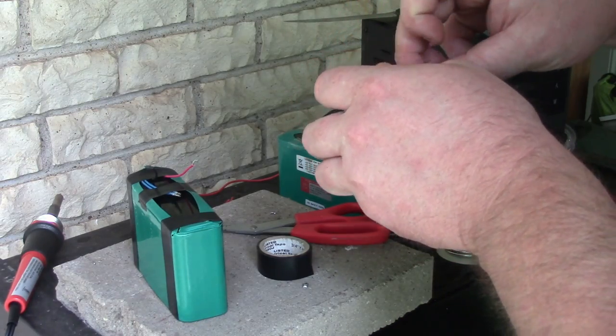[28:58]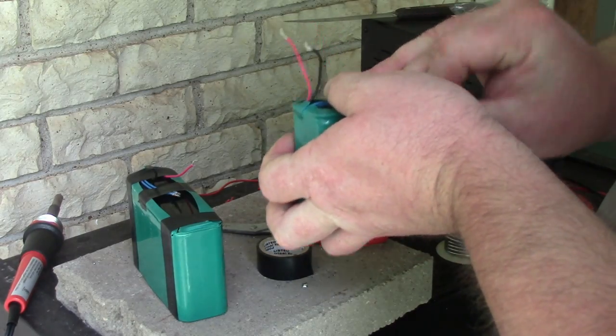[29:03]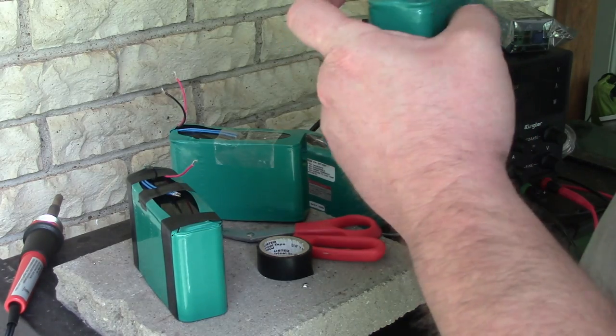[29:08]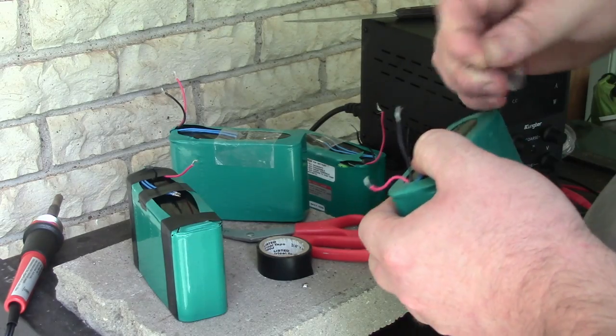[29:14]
I'm going to try not to touch these together, but if they do touch together, the BMS will just shut off. I won't get an explosion. I can get this packing tape up. Use the packing tape to hold that down. Not this one here. Just getting the blue wires out of the way, right? So this one's in good shape.
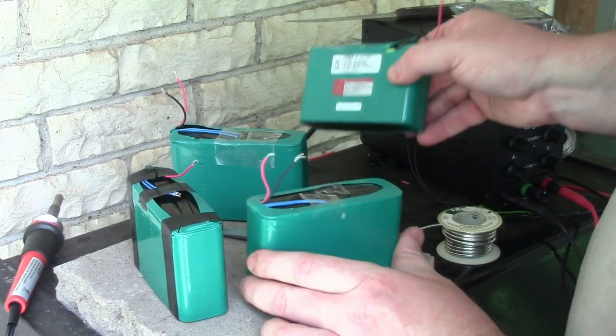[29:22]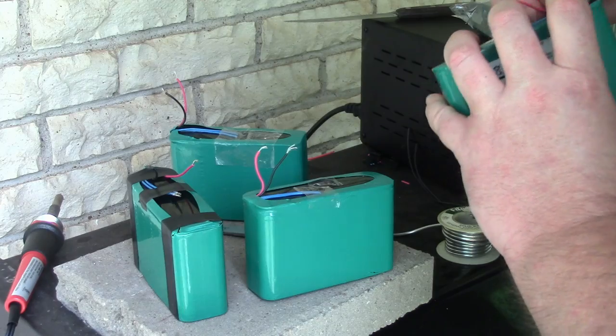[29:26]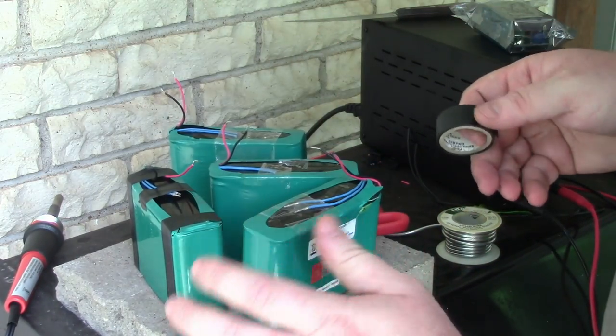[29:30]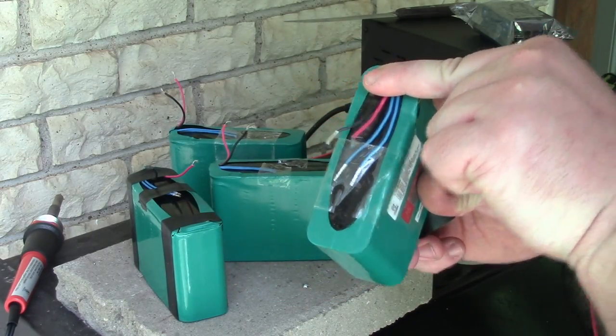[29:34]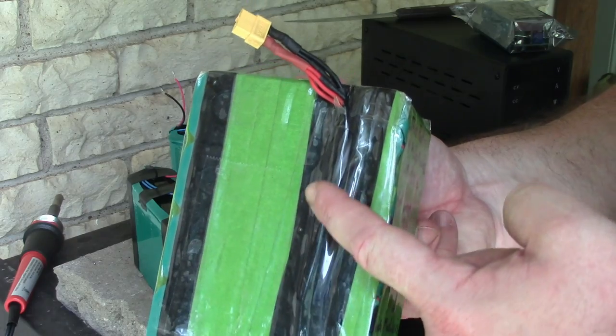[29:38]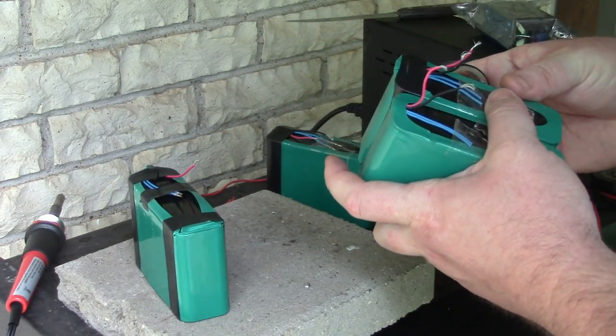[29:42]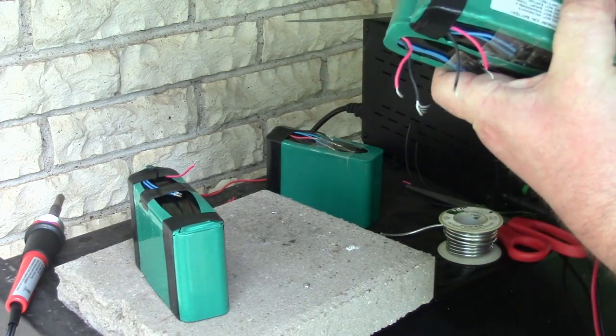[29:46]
This heat shrink has exploded, so I'll do the same. Same maneuver. I'm gonna tape all of my wires down flat, and I'm gonna have them coming up in a line like I have here. So on that last pack, I just used a whole bunch of tape to hold things together. All right, so I'm gonna start with sticking two together.
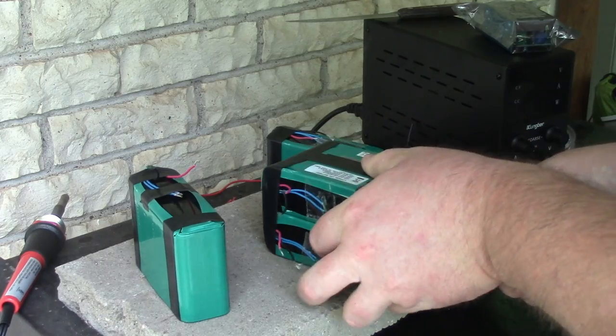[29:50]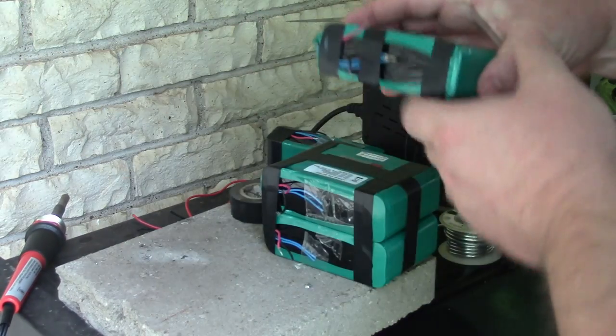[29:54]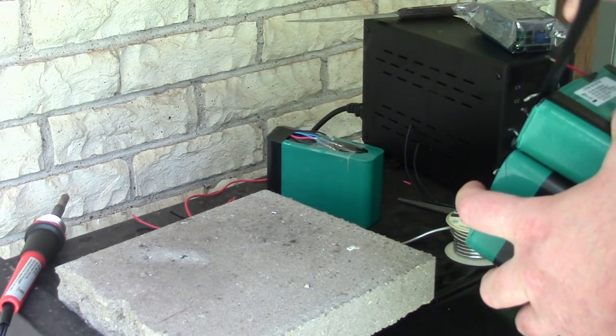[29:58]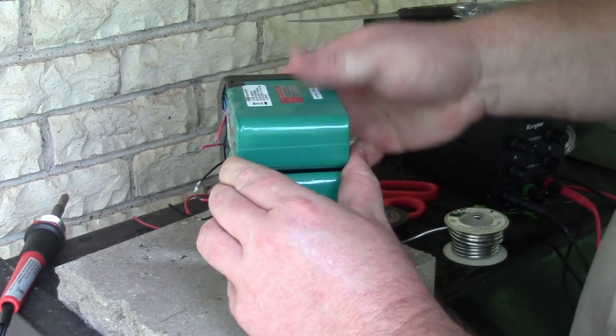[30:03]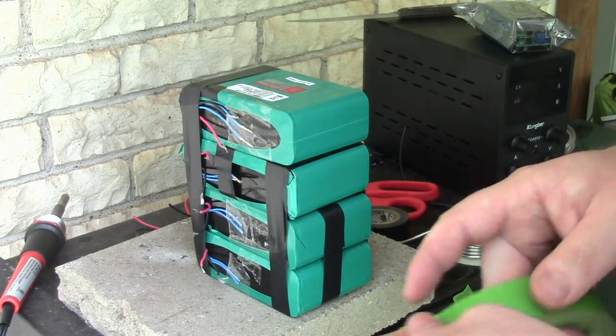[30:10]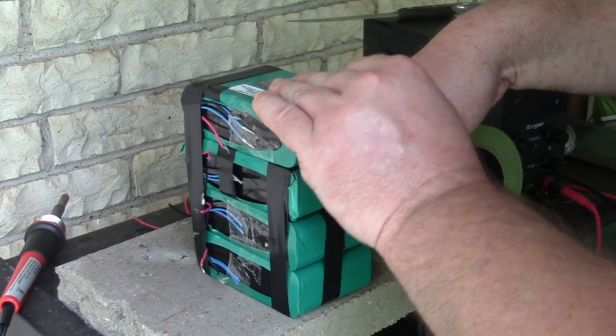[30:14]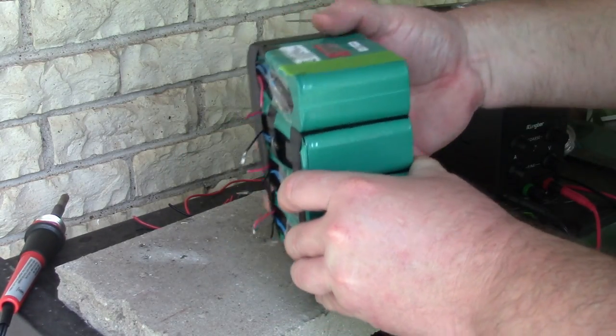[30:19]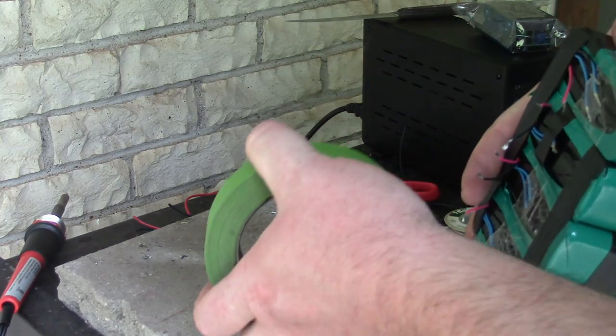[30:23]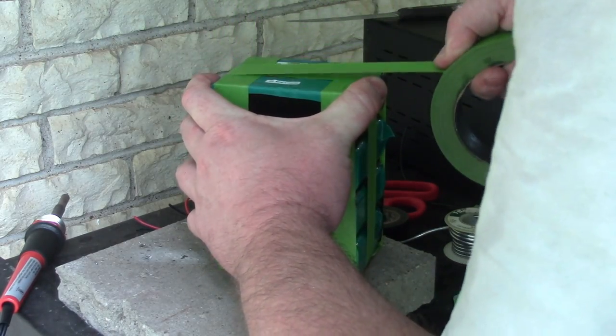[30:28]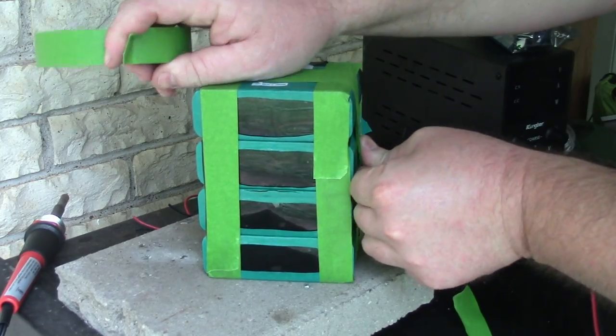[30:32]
Okay, whatever. There's a little bit of tape. Now, let's go for some... probably paper tape isn't a good idea with something that could catch fire. I'm going to wrap it in boxing tape, so that will help. Okay, whatever. You get the idea. There's some tape. This thing is loosely together now.
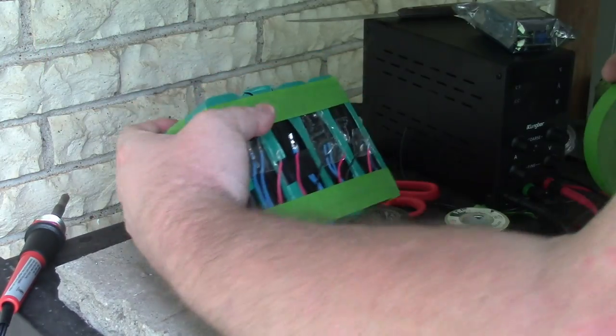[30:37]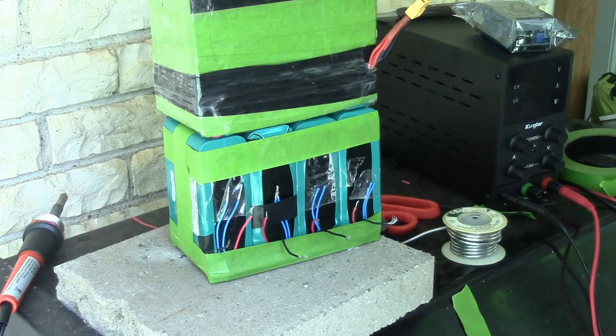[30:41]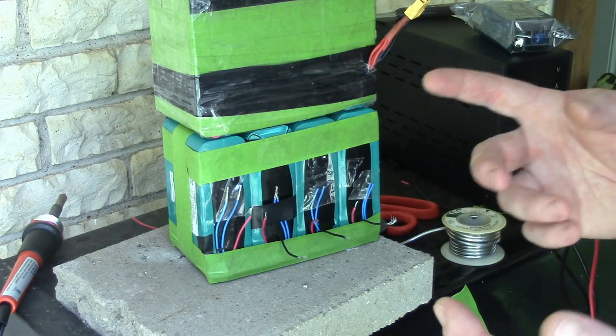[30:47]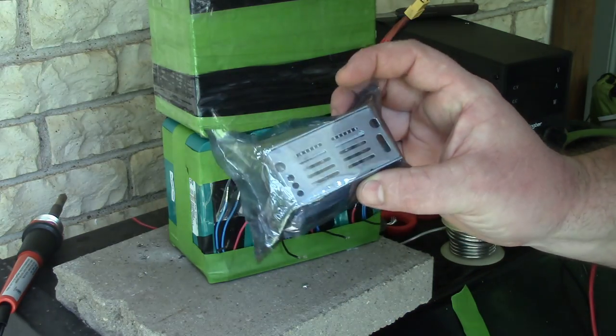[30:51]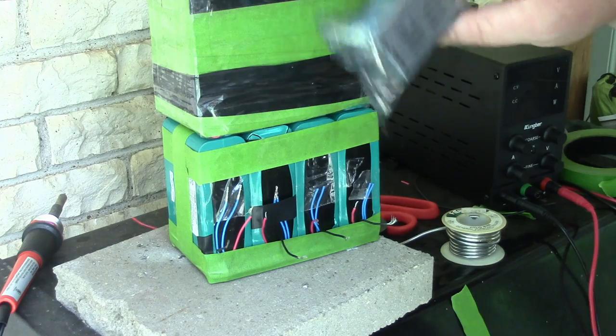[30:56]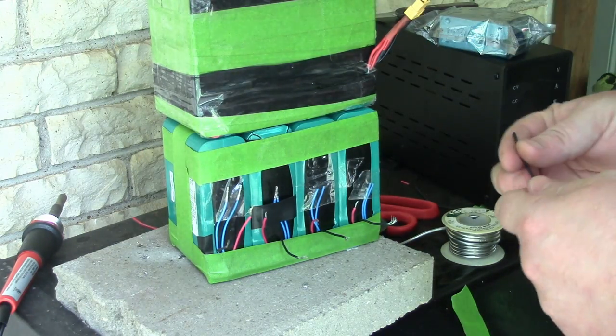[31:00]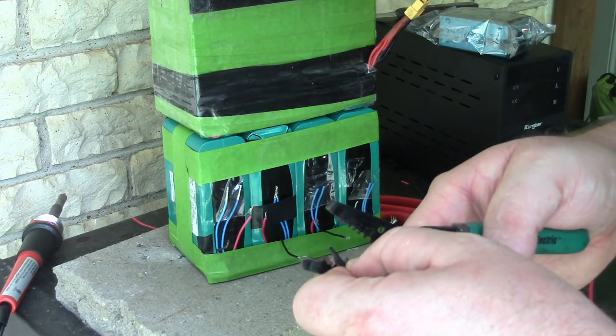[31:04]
Now we can get serious. All right, so I'm going to build these two packs as mirror images of each other, just because there's so little space inside the box. I have a plan for how to fit everything in there. I have a buck converter to regulate my voltage, and I'm going to just slide that down in there. So anyways, God, what is wrong with my dog?
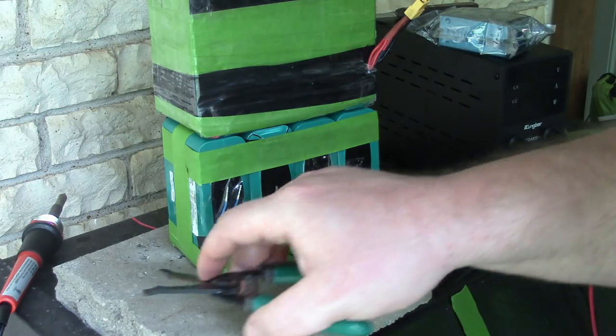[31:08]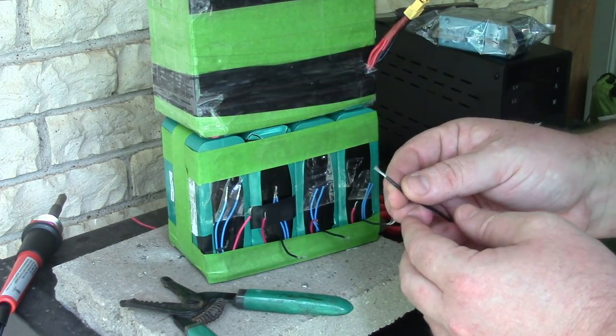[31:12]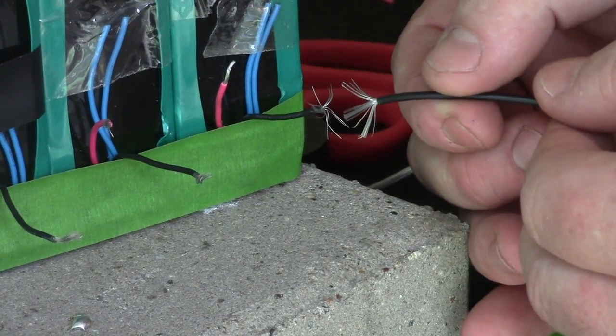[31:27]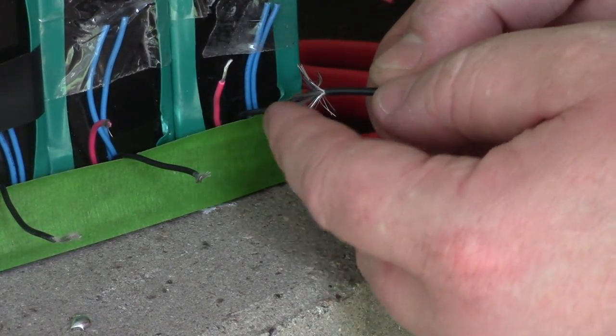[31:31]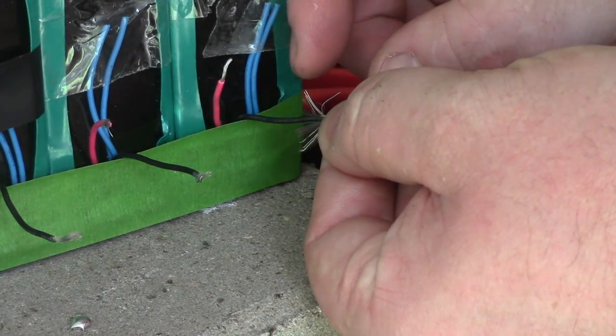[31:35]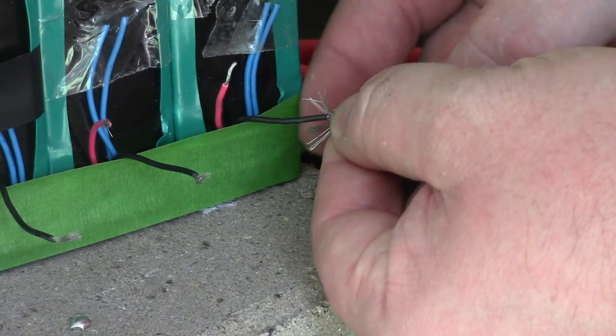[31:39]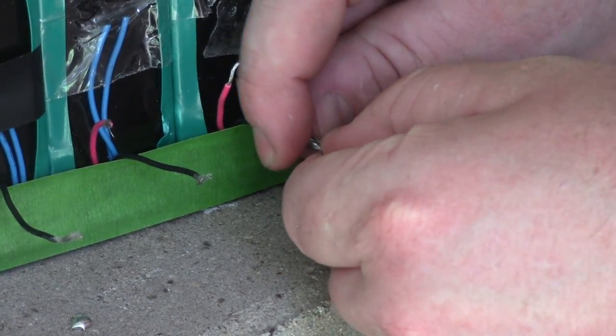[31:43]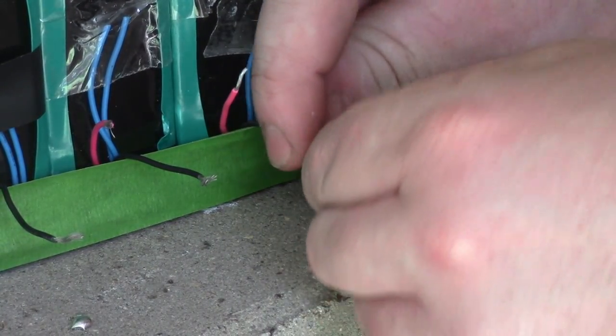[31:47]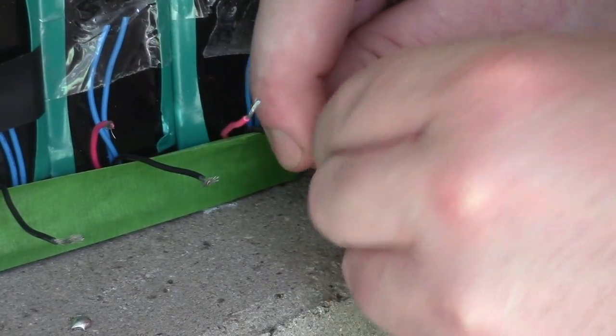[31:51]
Okay. So I need to extend all these wires. The way I like to do that is I fan out all the wires like this, and then I match it over here. Sort of. It's not very well matched. Okay, so I'm just going to wedge them in there like that. I'm going to try to fold the ones that are supposed to come down, and these others can go up. And I'm going to pinch it, and I'm going to twist it. I'm just sort of smooshing everything together, twisting it.
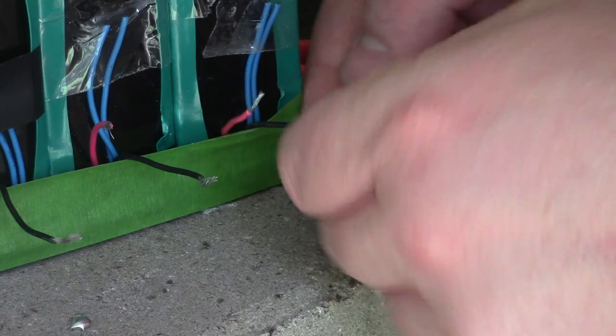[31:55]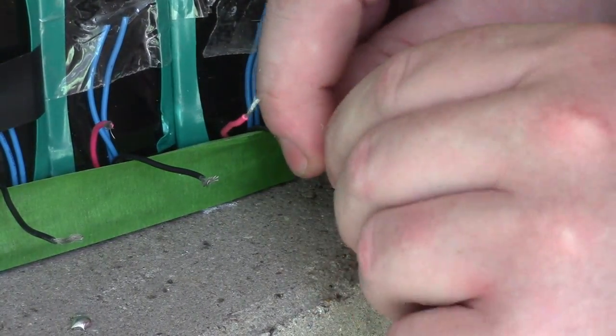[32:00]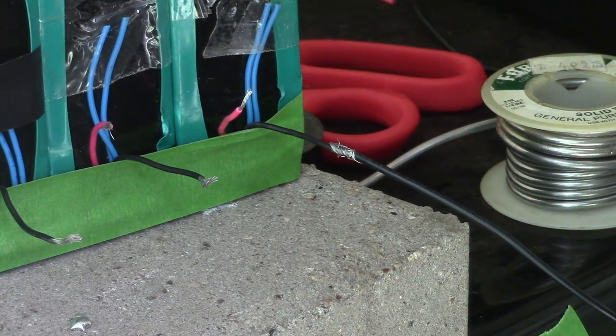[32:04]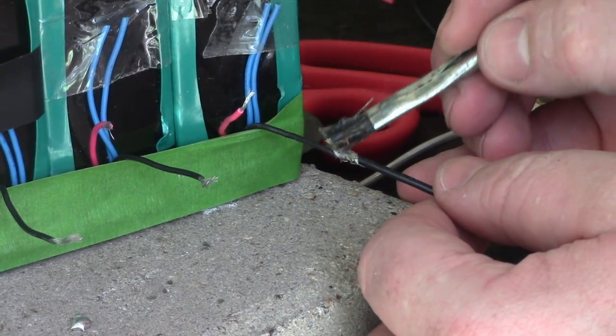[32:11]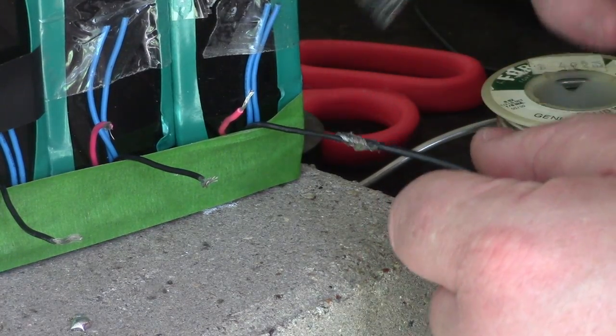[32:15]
Ooh, that's an ugly one. Yep, every time I film, I make the ugliest little connections. But whatever, there's a lot of solder there, right? I mean, a lot of connection there. And then I'm going to take some flux. Ooh, that's a fluxy mess. Too much flux.
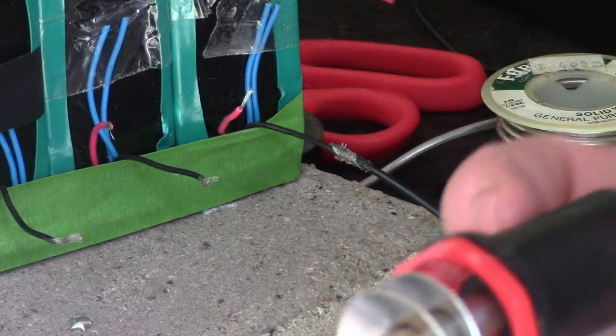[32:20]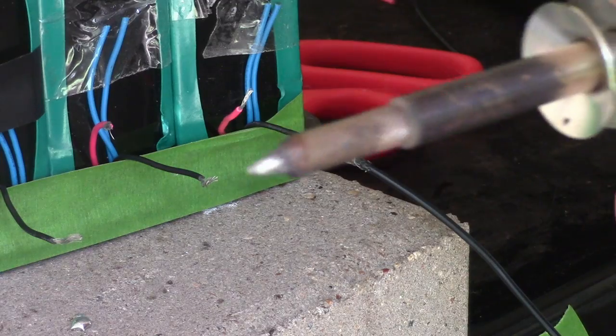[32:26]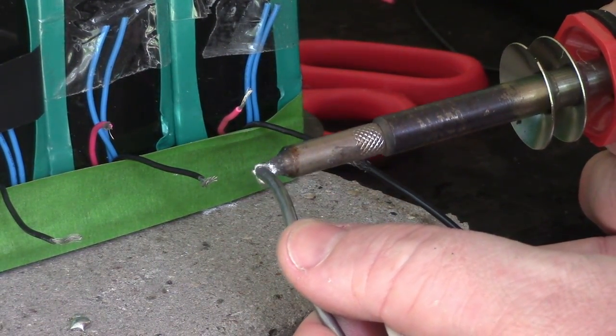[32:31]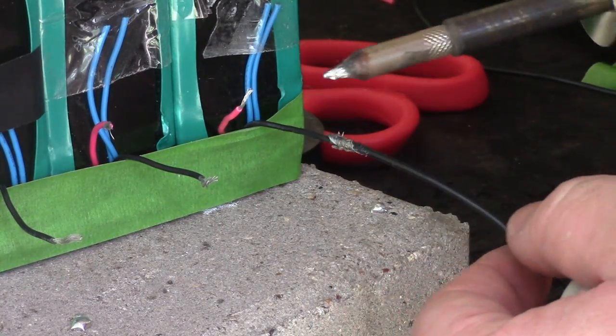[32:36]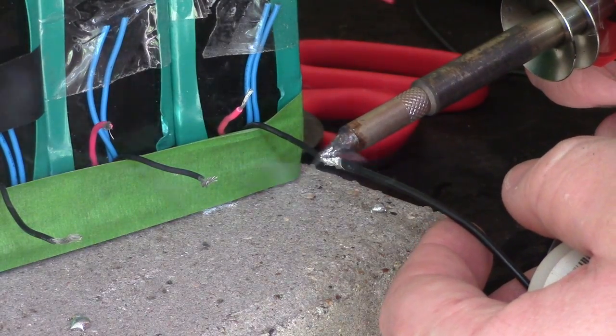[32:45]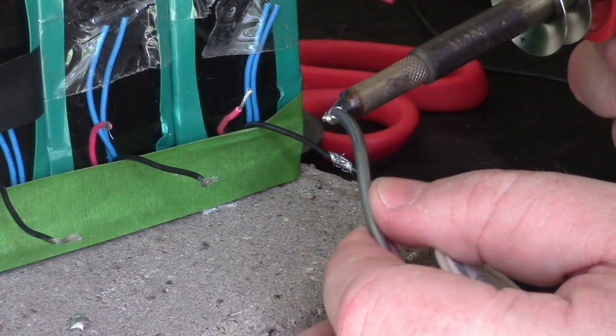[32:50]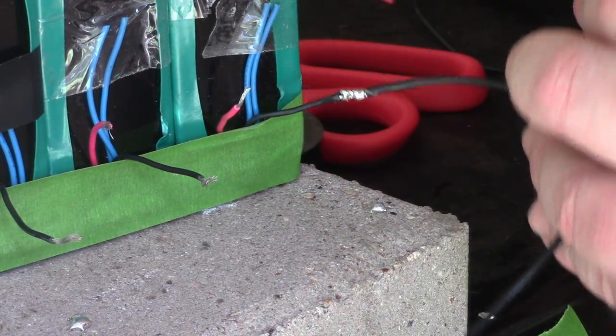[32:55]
I got my little... this isn't even a soldering iron. This is a wood burning tool. But it works. Let's see, is it hot enough yet? I'm just going to get a good blob right on top. Oops, lost my blob. I'm just going to put a little bit of a blob on there, and let it work its way in. Get a little bit more. Okay, well, that's a good enough connection for me.
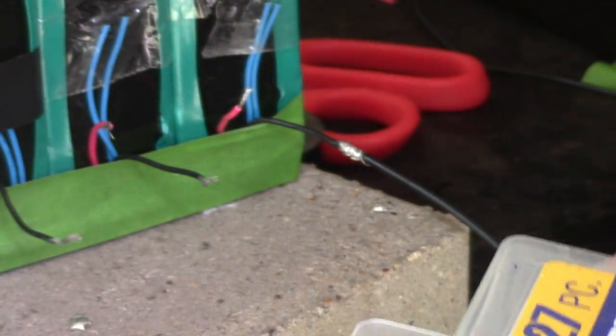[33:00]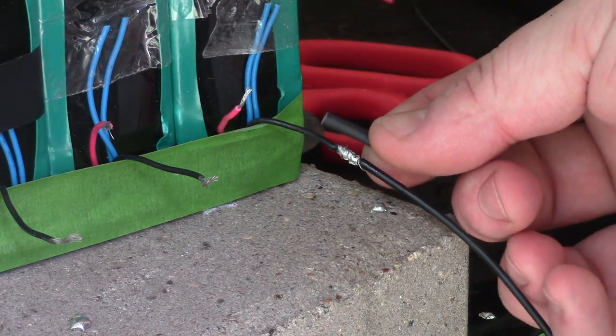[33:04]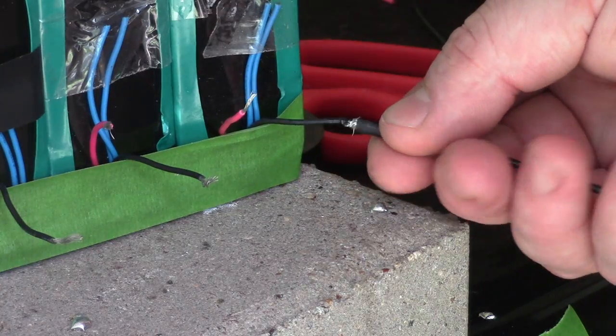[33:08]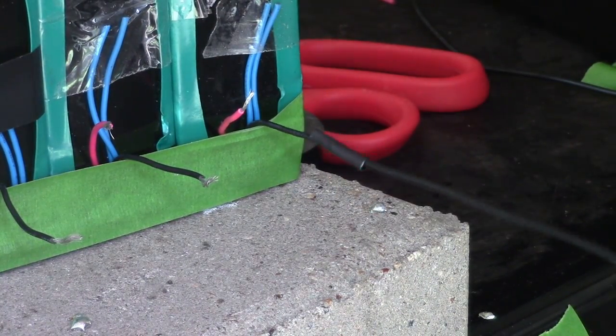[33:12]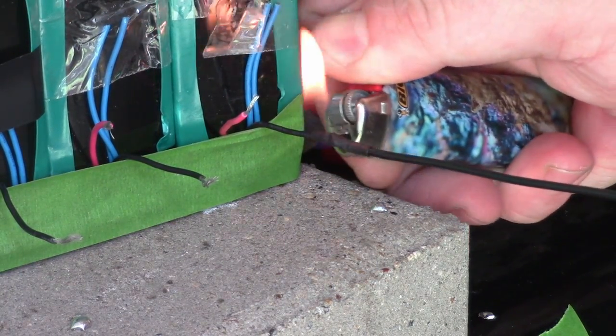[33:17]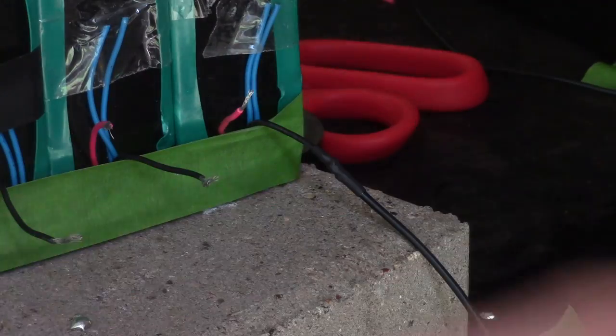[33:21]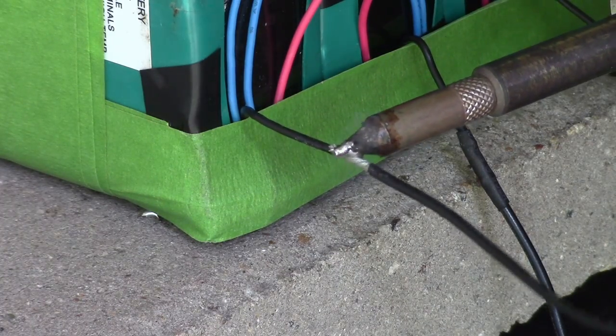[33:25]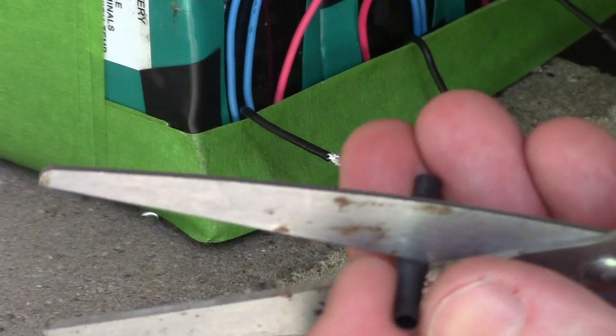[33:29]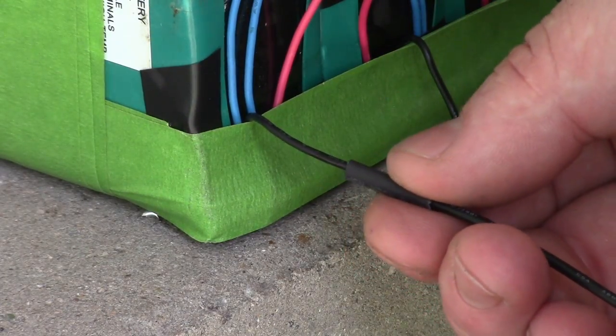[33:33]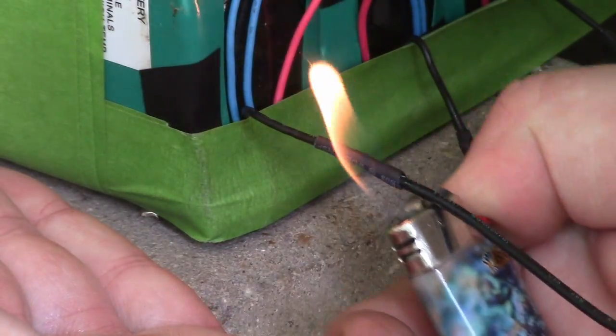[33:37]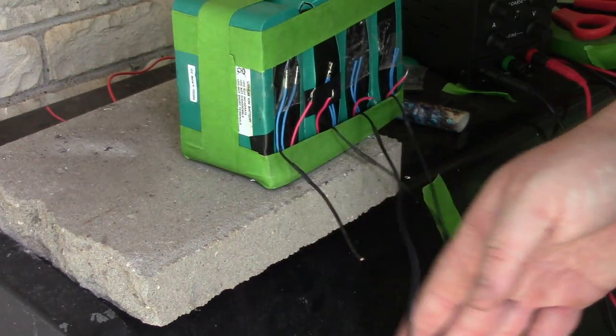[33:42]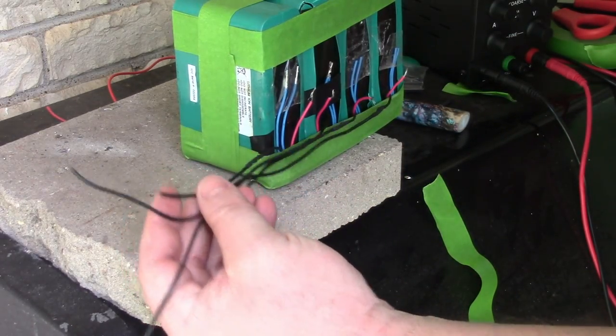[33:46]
Now I have heat shrink. What if I can squeeze a tiny piece of heat shrink over that disgusting connection I've made? I'm going to give it a shot. Cram that over. Melt it on. So I'm going to do that the rest of the way down. Cool. So there's the negative. Here's all my negatives, and they'll just come out this direction.
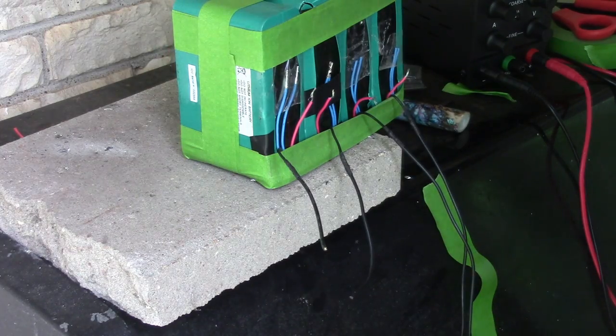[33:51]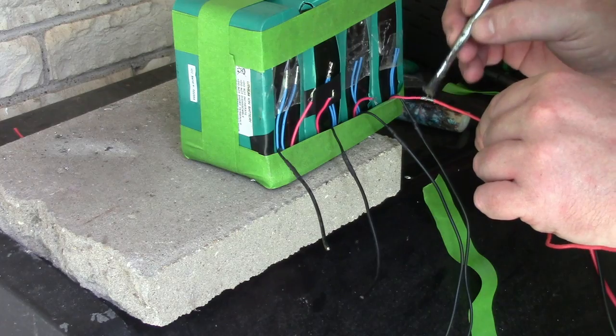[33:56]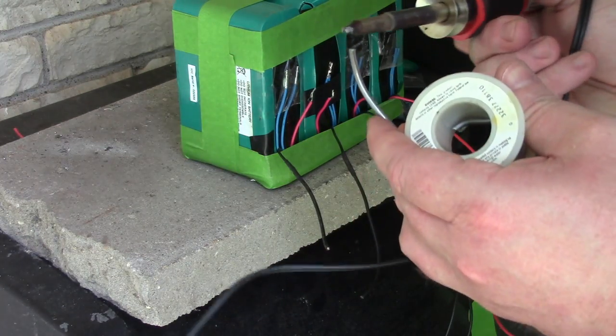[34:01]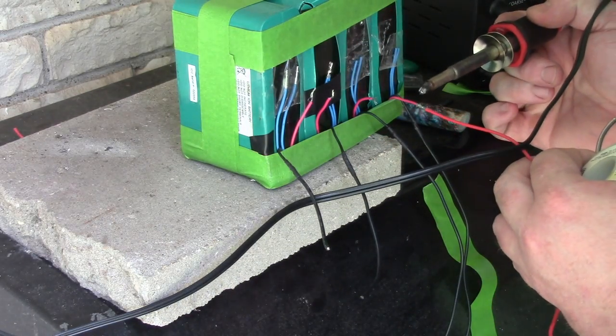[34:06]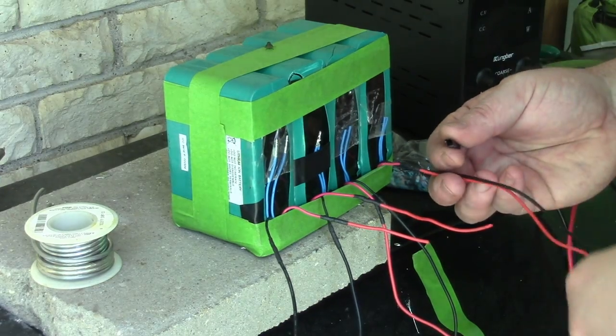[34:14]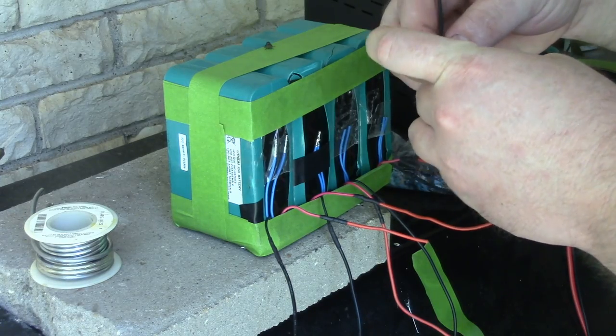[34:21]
Now for the positive. Yeah, but I just need to get these extended so I have something to work with. Get out the old wood burner, glob on just a bit, and oop, lost it all. Hell yeah, look at that. So the next thing I'm going to do is sort of work on a strain relief. I'm just using more heat shrink for this. I don't know why I like heat shrink so much. Electrical tape for this part would be a-okay.
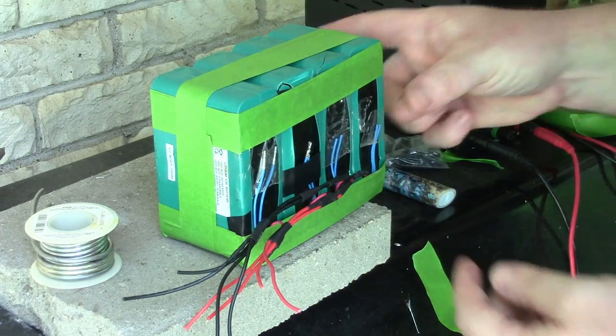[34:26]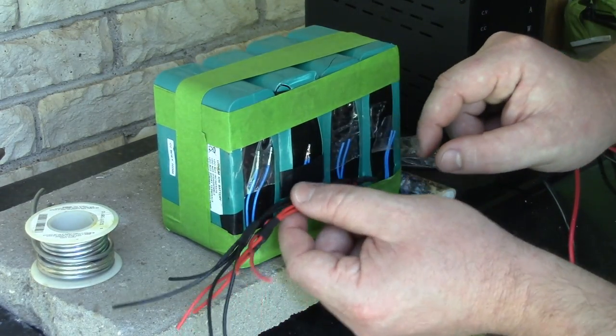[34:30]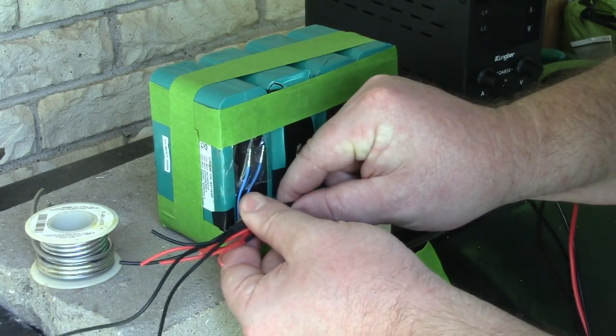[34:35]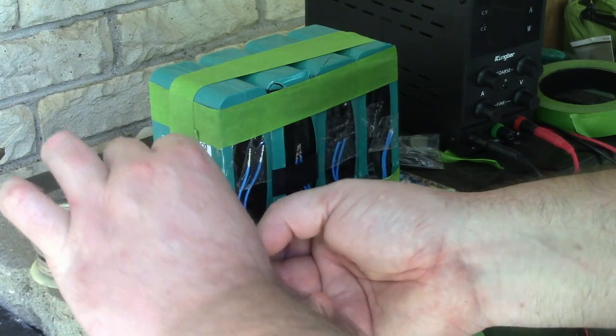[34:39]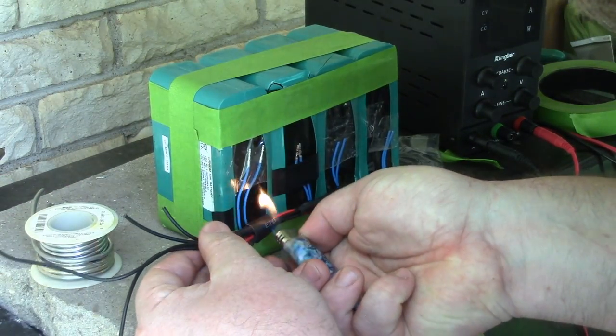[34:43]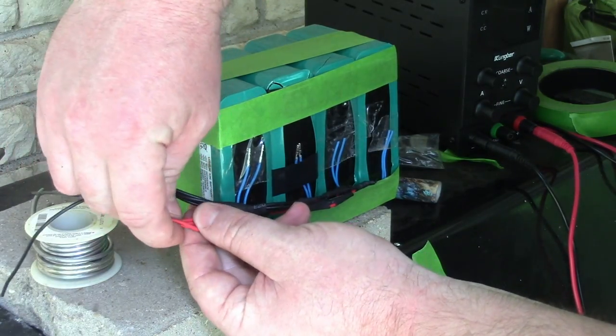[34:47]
All right, so what we have is the positives and the negatives. They're all sort of connected. I'm going to push another piece of heat shrink way down low. Yes, okay, I like that. I like that a lot, actually. My connector, I guess it's only going to be as long as my shortest piece. So let's just cut all these off at the same length.
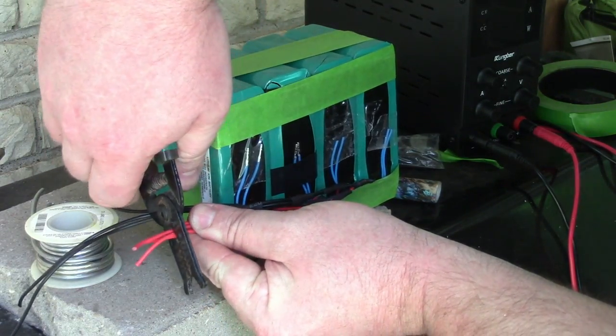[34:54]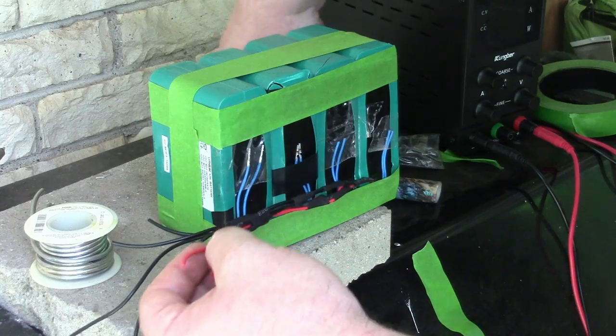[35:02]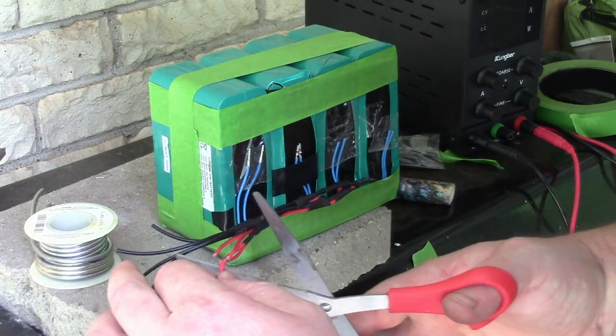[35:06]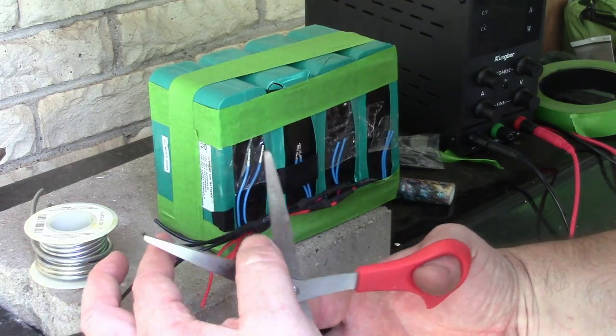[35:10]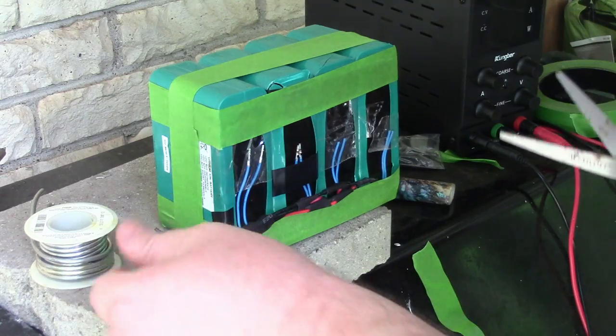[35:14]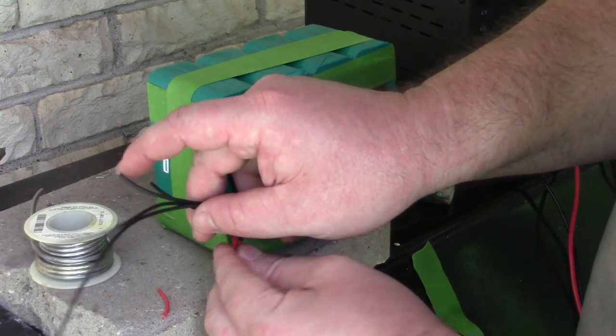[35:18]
Oh. Come on, man. Really? Oops. Oh, fuck. Shorted that out. Okay. One of the BMSs is asleep now after shorting that out.
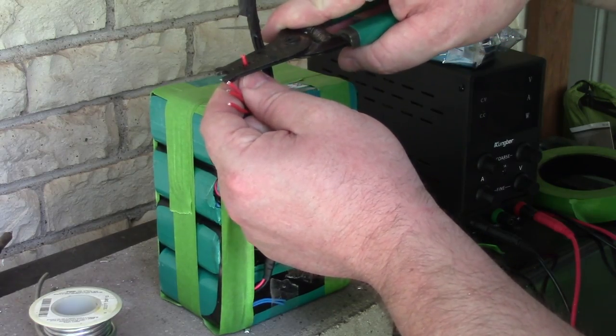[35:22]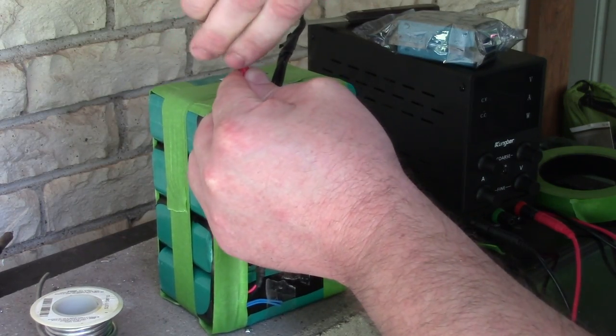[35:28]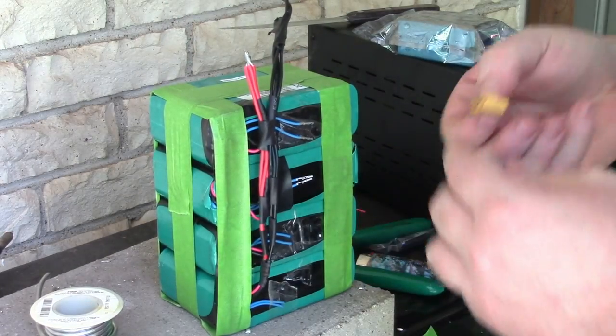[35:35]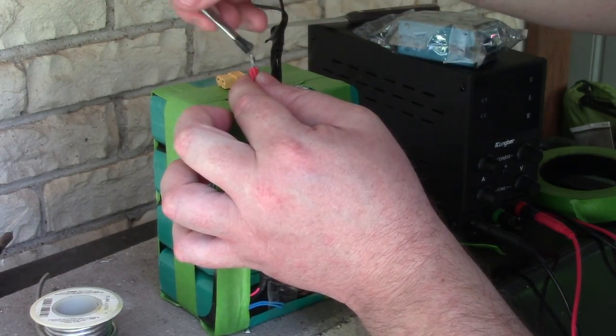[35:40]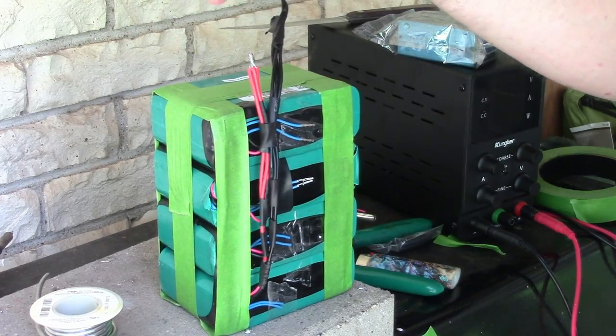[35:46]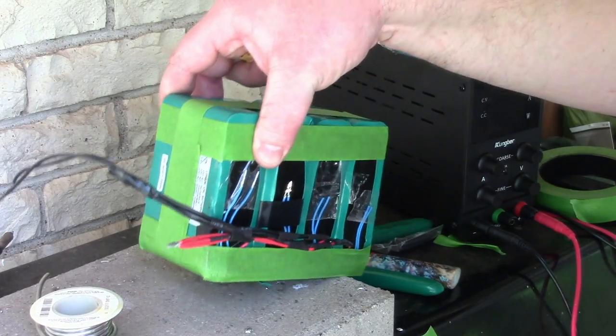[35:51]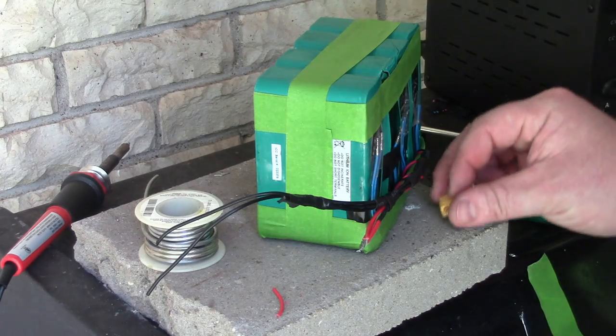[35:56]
Let's just start stripping all these and twist them up. Yeah. Twist it real tight. Real, real tight. Oh, goodness. Fit... not yet. I'm going to try putting a little bit of solder on the bottom, because this is too much wire for an XT60 connector. But I would love it if I could just get this to fit in there. I did it with the last one. So we'll see.
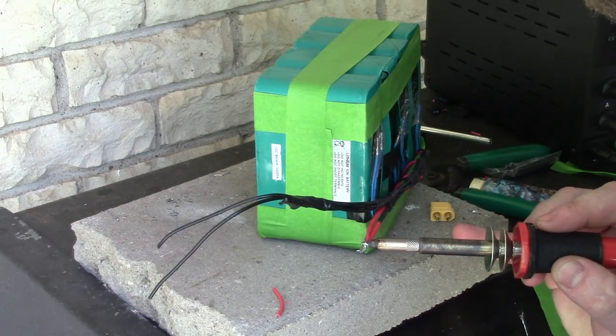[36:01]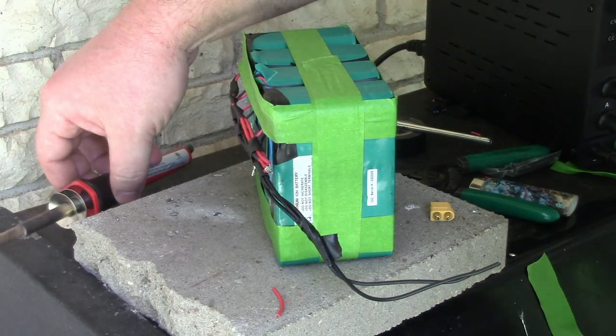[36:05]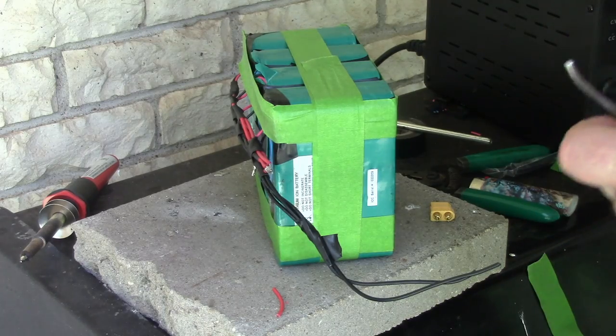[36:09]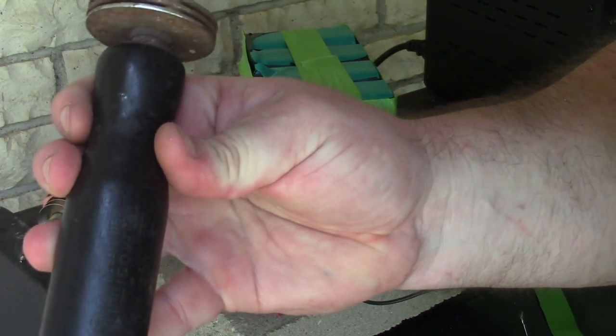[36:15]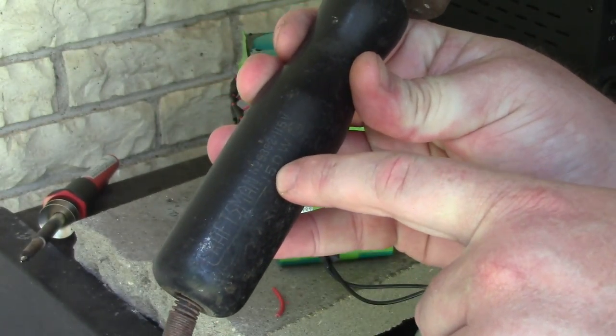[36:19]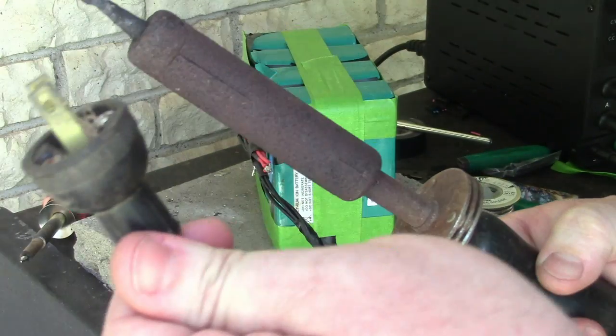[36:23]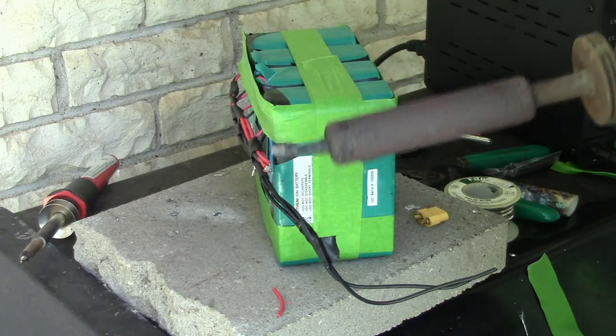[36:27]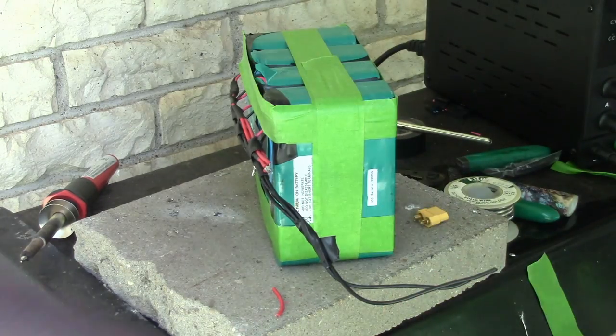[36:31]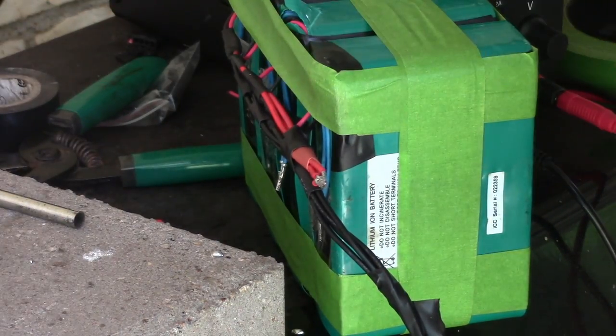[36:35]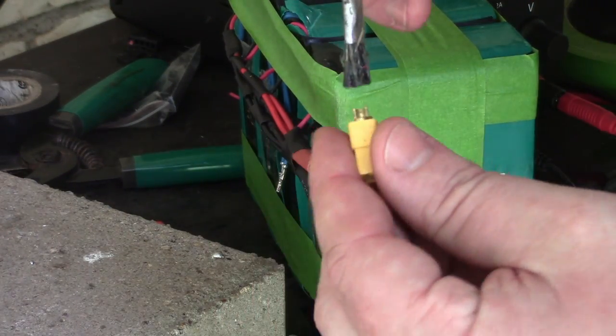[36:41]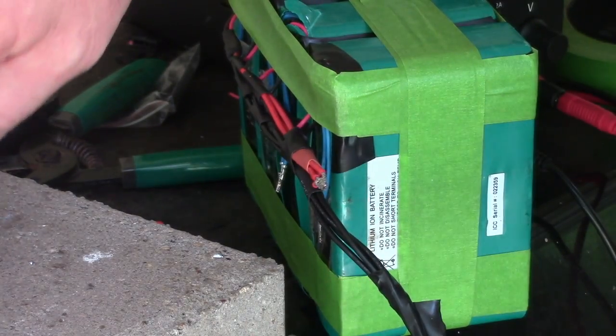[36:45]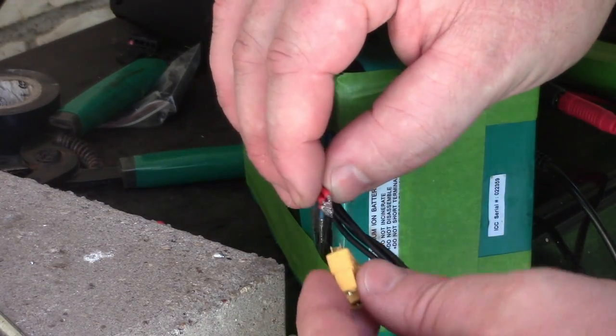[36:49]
Okay, so everything's stuck together there. I need to get out my bigger iron if I'm going to actually get this to solder into here. Where's the handle? I don't even see it. It says 150 watt iron, old school. It makes enough heat that I can liquefy everything and get it to melt in place. So let me start warming that one up. All right, every time I solder something, it's like a total cluster F. And at least when it's on film, I look like an idiot every time. So I'm going to show you what it looks like being an idiot. So this is way too big for here. It'll go in a little bit.
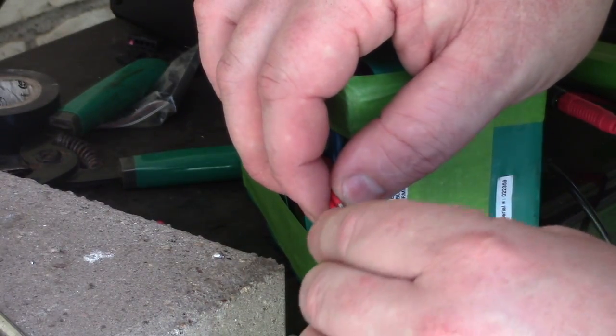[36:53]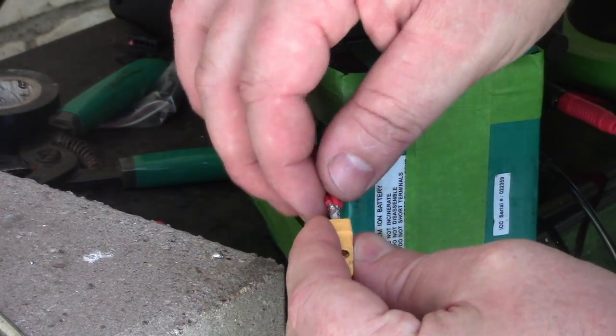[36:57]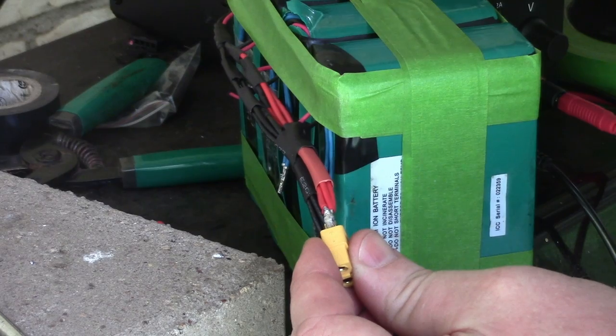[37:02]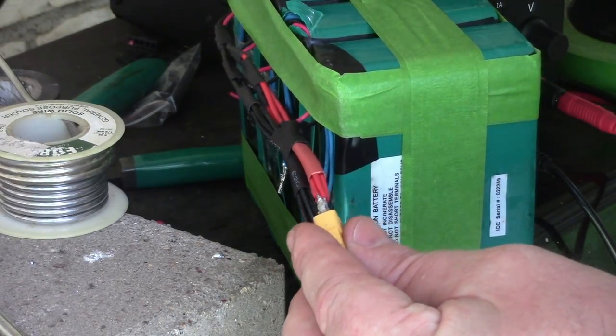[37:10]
I'm just going to try to get it in a ways. I'm going to just put a little bit of solder on my iron real quick. Maybe a drop that'll stay if I'm lucky. So I got my big iron.
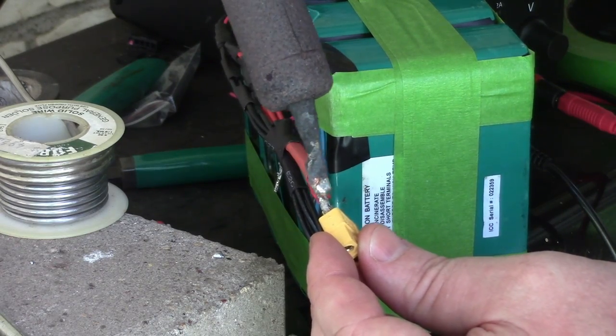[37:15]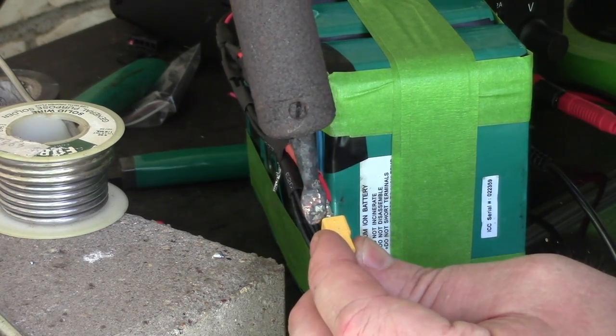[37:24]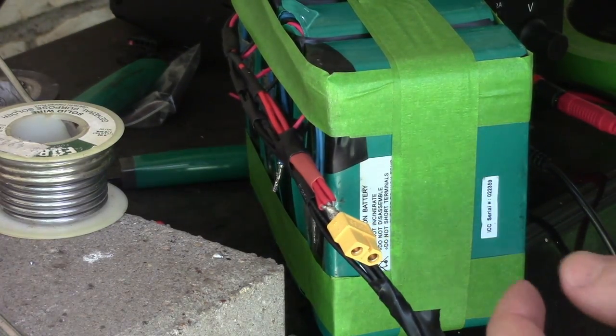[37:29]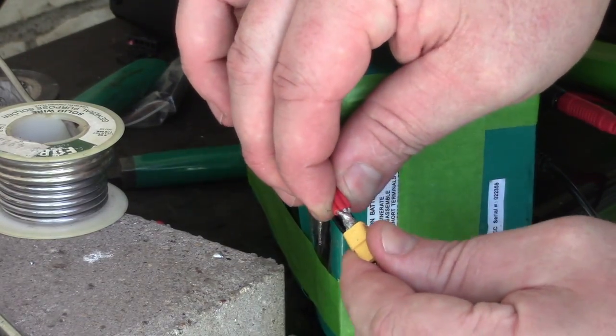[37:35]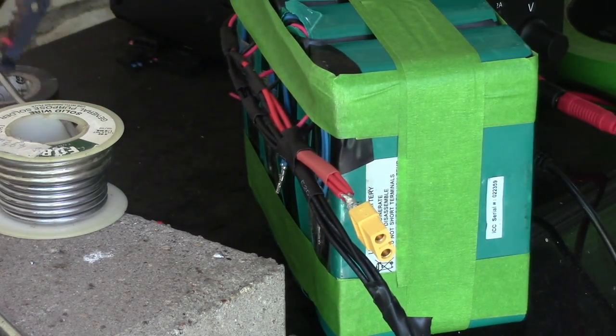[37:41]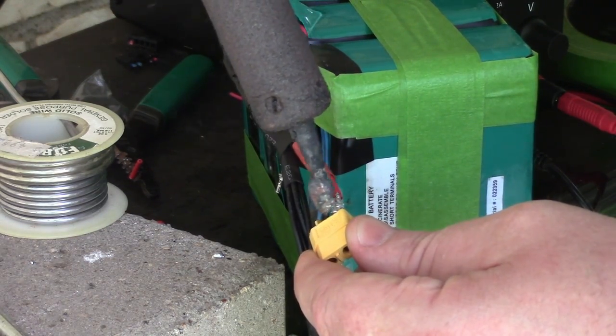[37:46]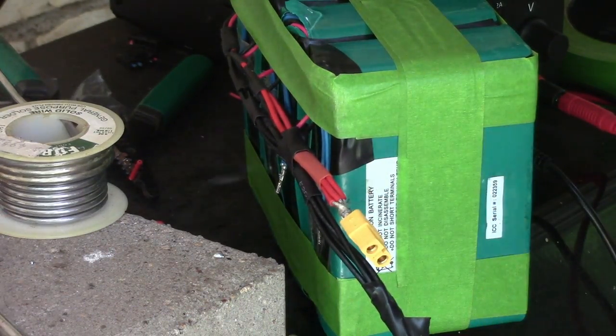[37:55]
Can we see this? Oop, most of it fell. Oh my god, everything's falling. So, I mostly, you know, it's on there. That little drop there is kind of big. Let me see if I can melt that off. Probably can't really. Let's see. Melt that down just a little. Yeah, it's slightly different. Okay.
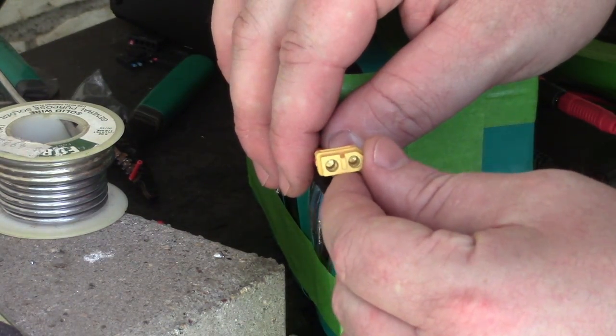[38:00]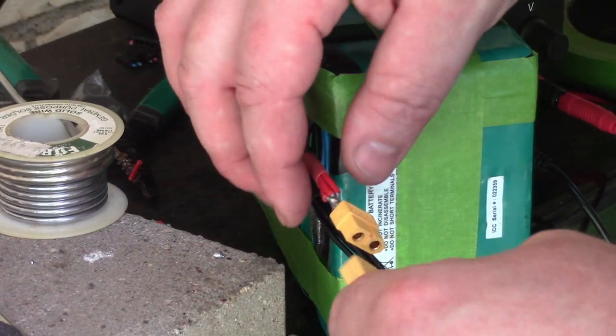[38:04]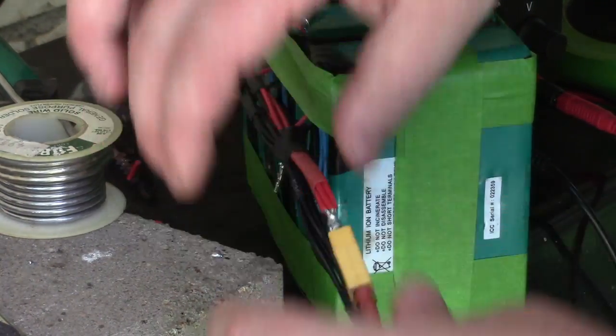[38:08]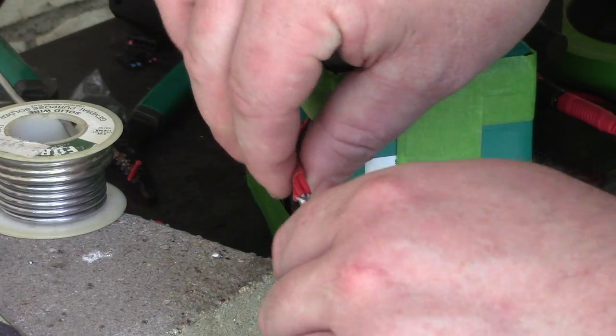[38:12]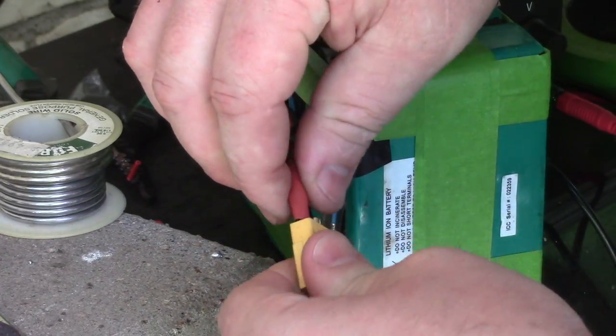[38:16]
So that's hot as snot. You know what? It's a good idea to have more place to dissipate heat so you don't ruin these things. Let me just put on another connector. A little bit warm. I should be able to get my heat shrink up and over.
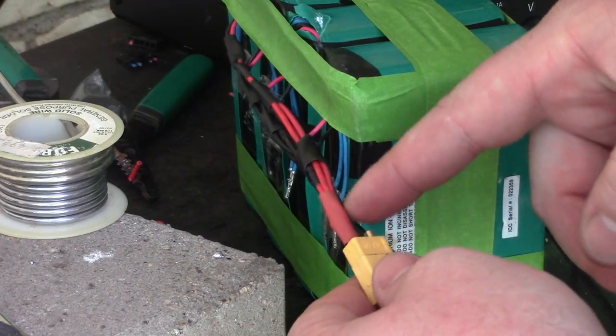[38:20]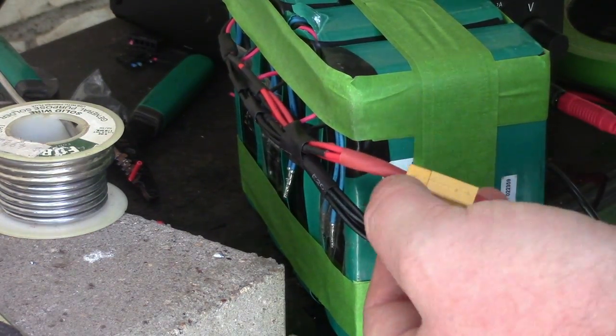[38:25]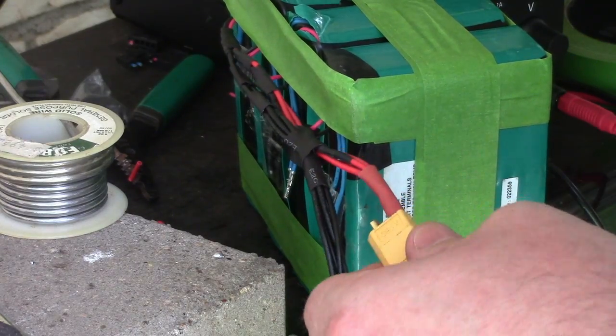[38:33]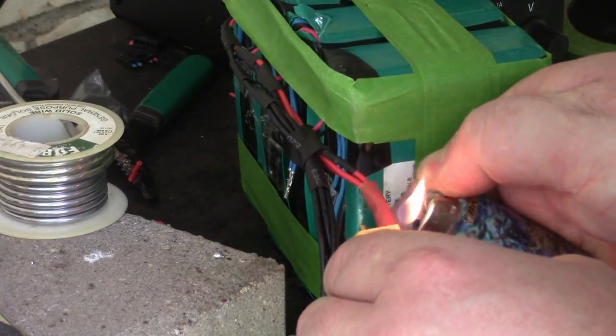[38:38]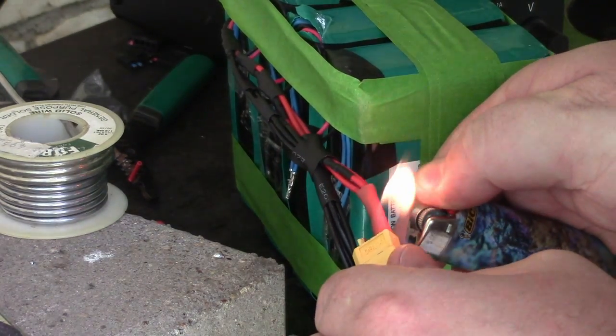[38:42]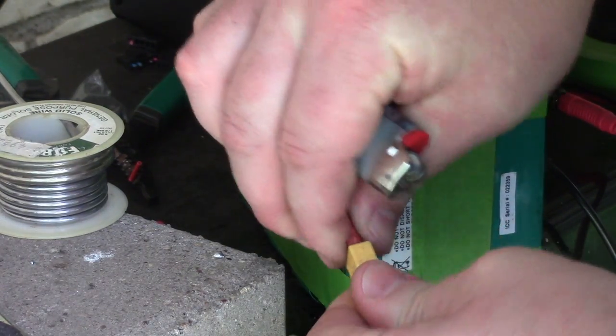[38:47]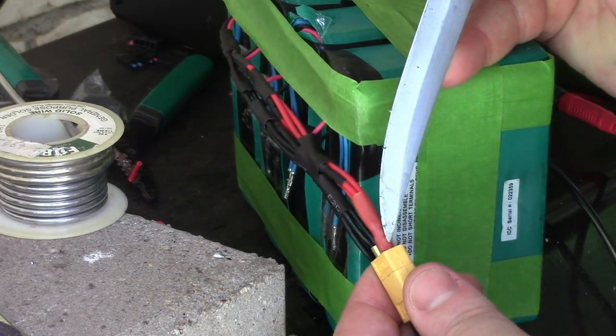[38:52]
So this heat shrink is a little bit big for getting really down in there. So I want it to go into the little recesses of the XT60, right? So I'm just gonna melt it just a little bit. Make it smaller. Let me twist it around. Make it smaller on this side. I'm gonna cram it. Then poke at it, get it in there.
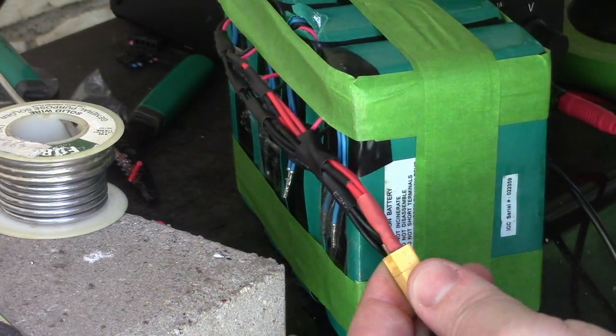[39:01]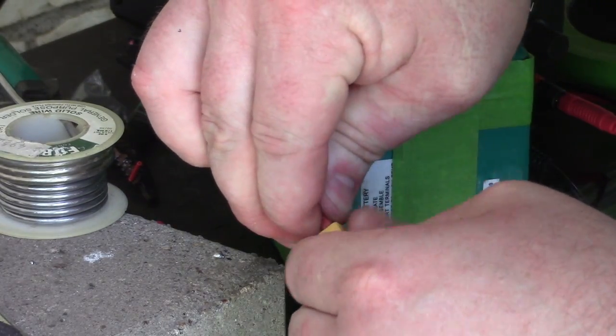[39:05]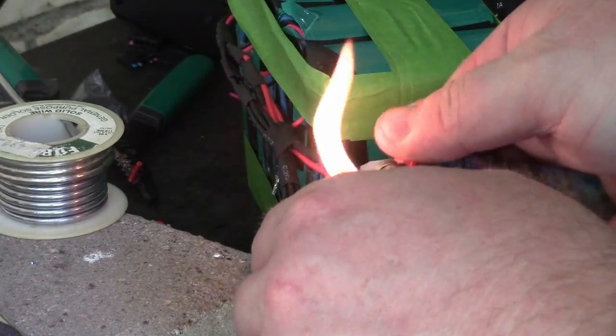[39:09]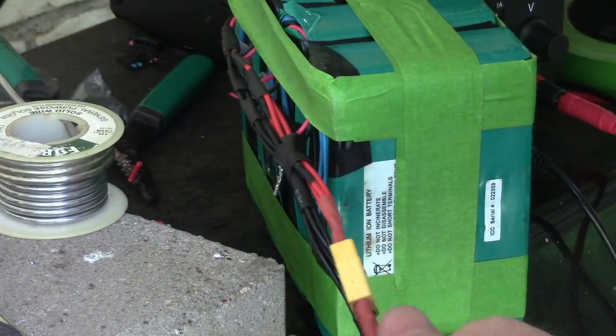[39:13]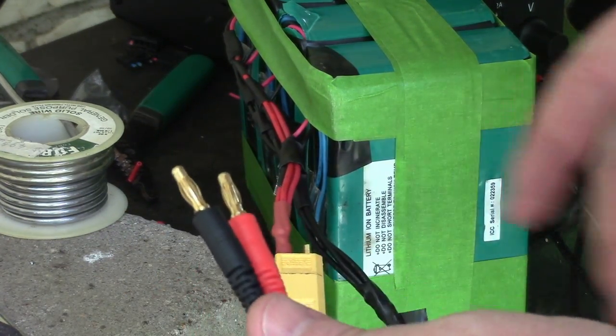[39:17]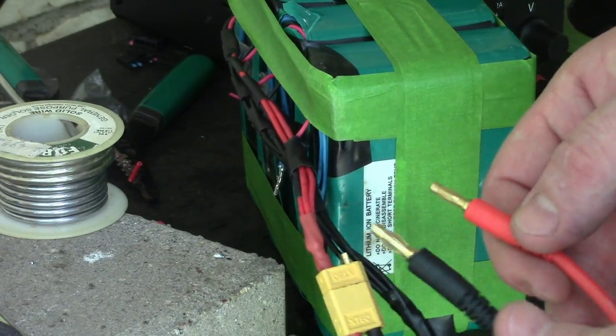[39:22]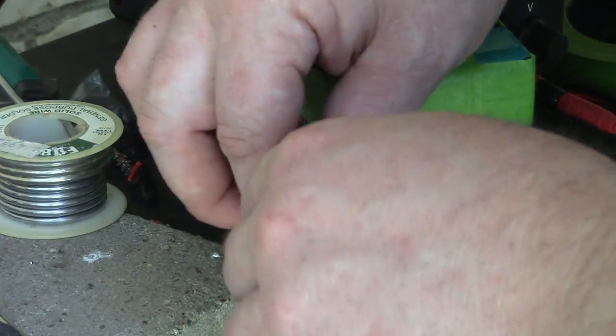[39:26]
Come on. Yeah, it looks like it's in there. Now I'll finish shrinking it. There we go. There's one connection made. So I can't use this for the whatever I'm trying to do here. Absorb some of the heat since these are open. Let me find a different connector real quick.
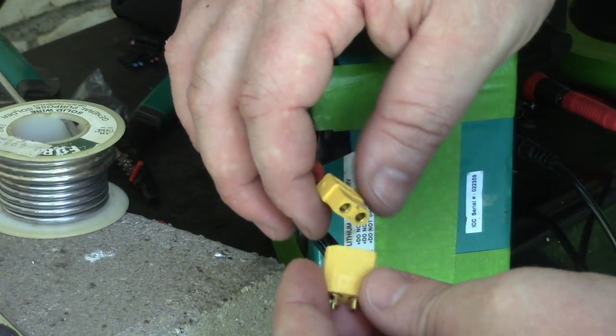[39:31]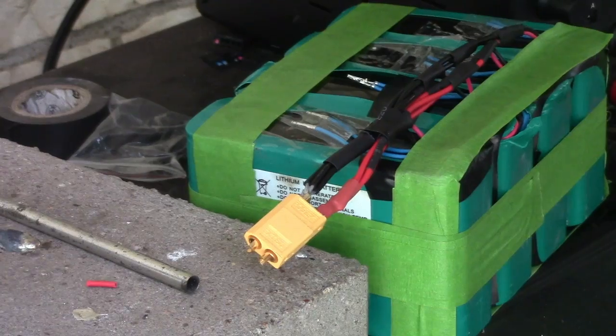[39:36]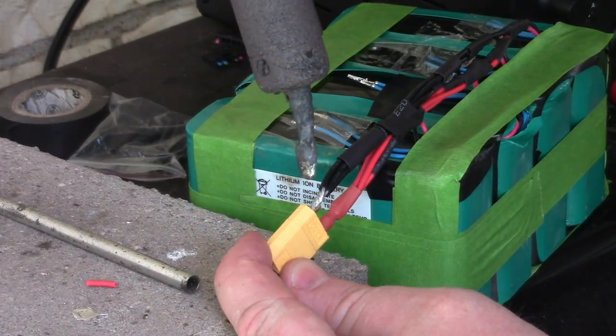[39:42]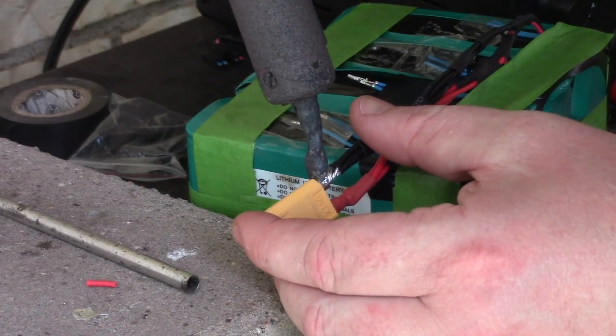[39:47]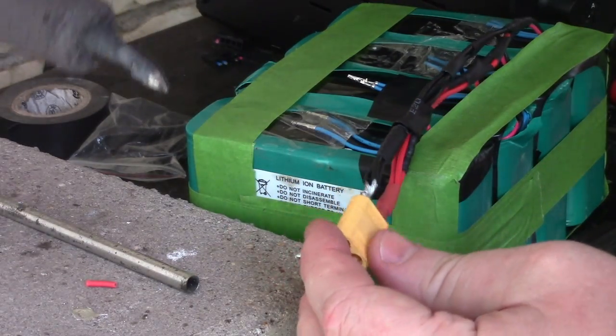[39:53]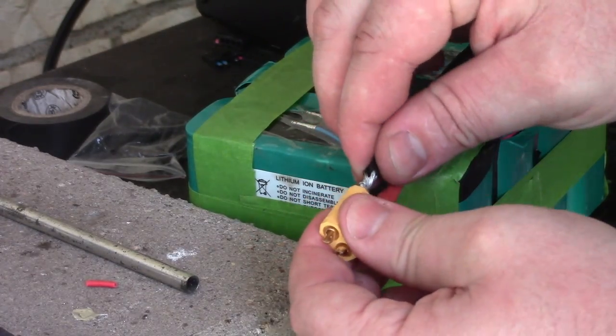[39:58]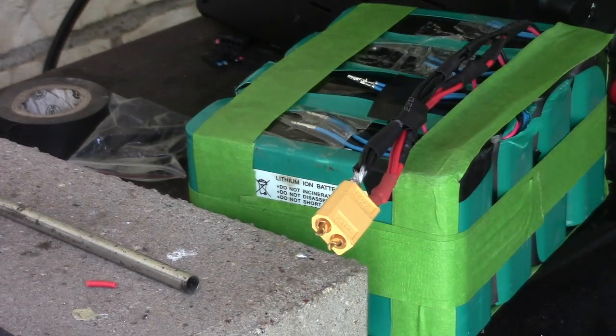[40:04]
Alright, so here's a mill-in that I'm less likely to short out. We're just going to jab it on there to help hold everything in place. Okay, let's go for it. We got this one here crammed in as far as it'll go. Let's see. Maybe. Feels pretty good. My wire's kind of separated as I tried to cram it in. I think that'll work. We'll let it cool off a bit so I can get this heat shrink over before it shrinks.
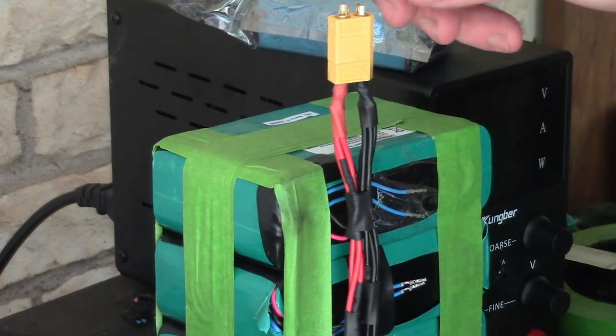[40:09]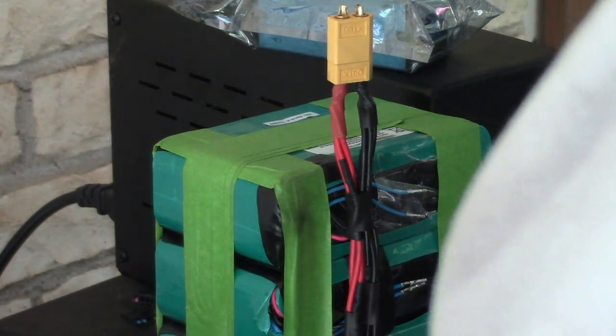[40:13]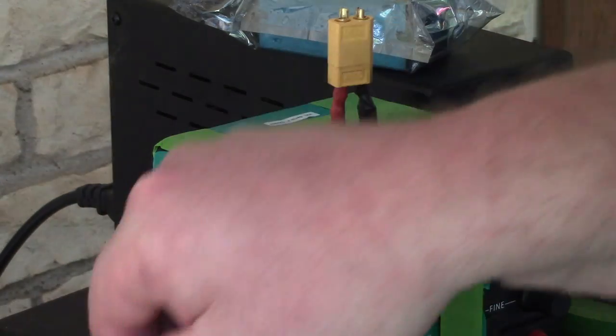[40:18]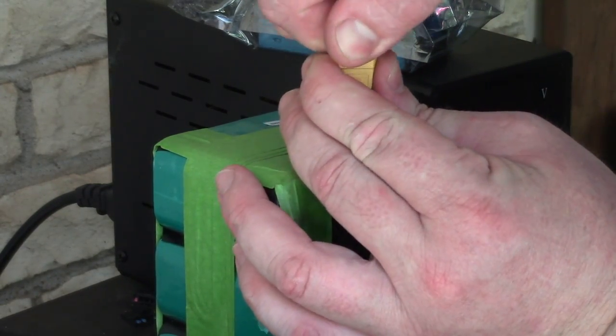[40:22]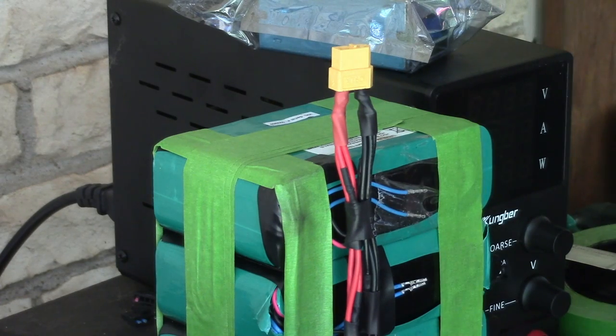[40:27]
All right, so both these should be hot. Where's my multimeter? 15.88. Very nice. So let's go ahead and take this top part off so we don't accidentally short it out, because that's the easy thing to short out.
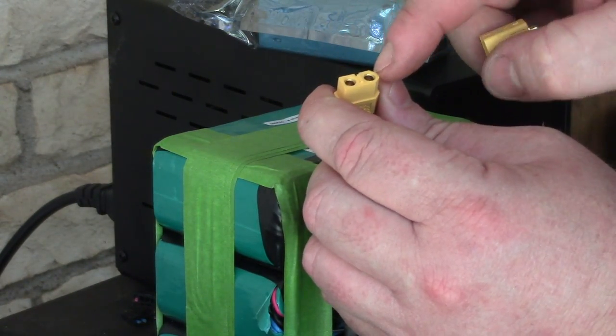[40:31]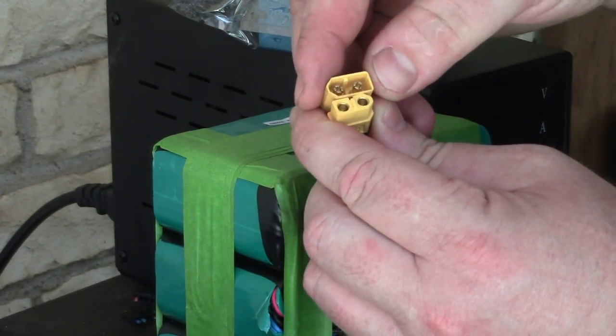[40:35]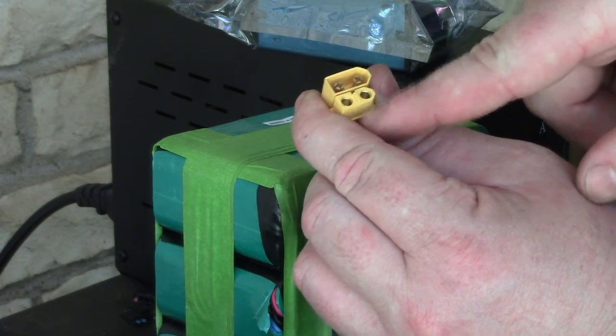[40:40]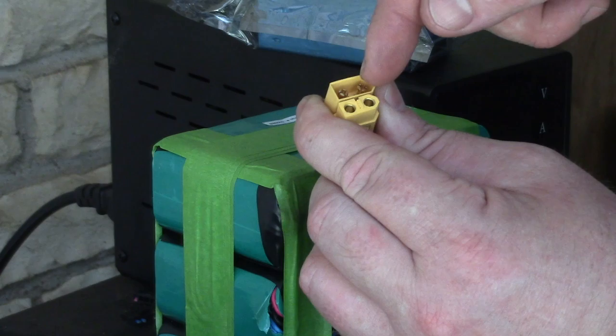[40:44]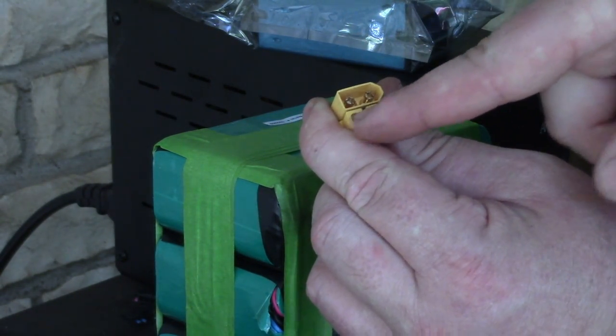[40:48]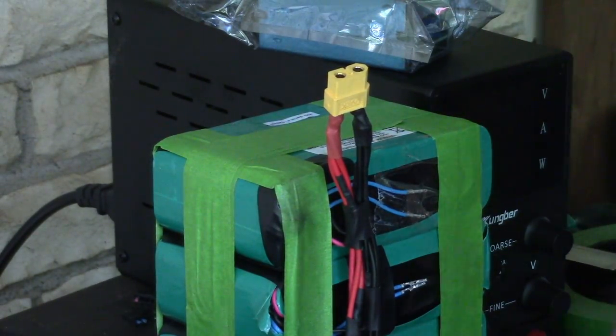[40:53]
One more thing about these XT60s. The female end looks like that, and the male end looks like this. So even though this slides into that, the male end is the two exposed bits that could short out real easy. The female end is the two protected bits that's very hard to short out. So I'm gonna wrap it up with masking tape, and I'll get back with you in a bit.
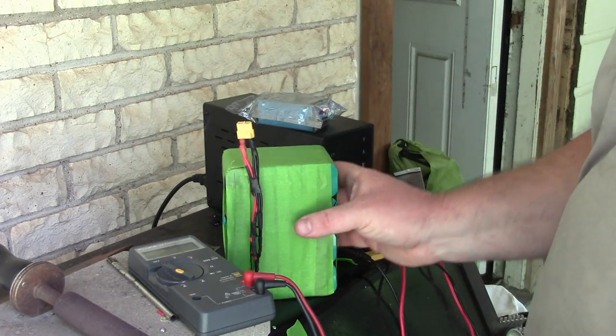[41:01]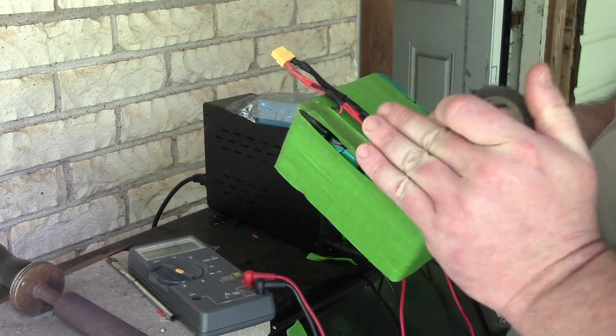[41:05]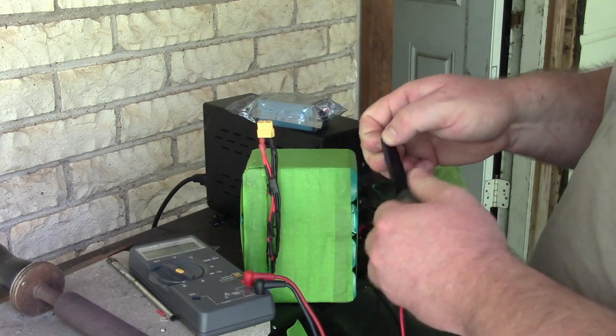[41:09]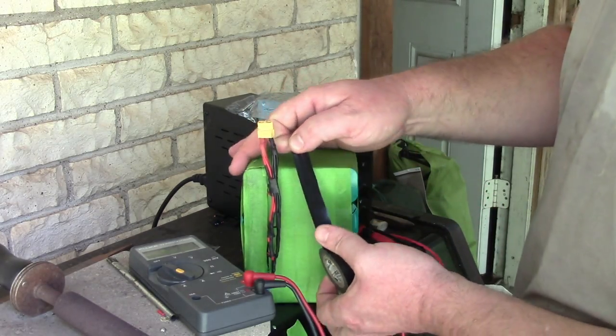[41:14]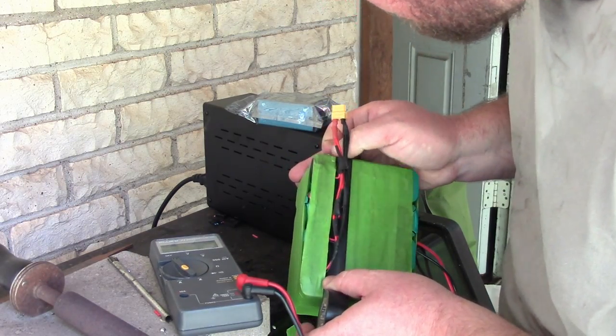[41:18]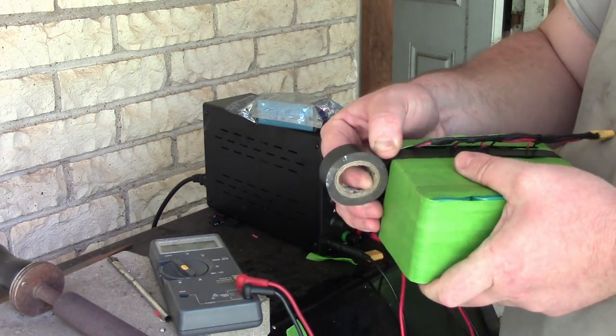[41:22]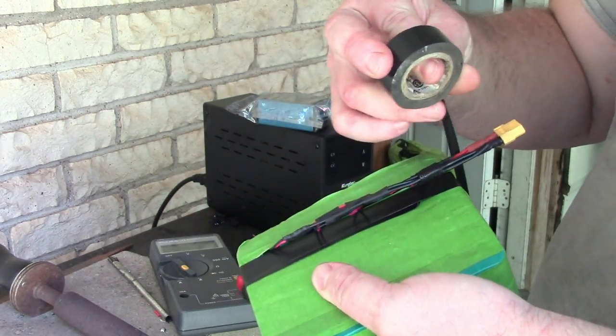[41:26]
All right, so just like the other pack, I'm gonna wrap this up tight and get it mounted flush. I'm gonna use the electrical tape for this one just because, no real reason. I'm just gonna go for just tons and tons of tape. So I'm gonna work that down in there. That'll be my first run right there. Okay, there's that. I'm gonna come back around.
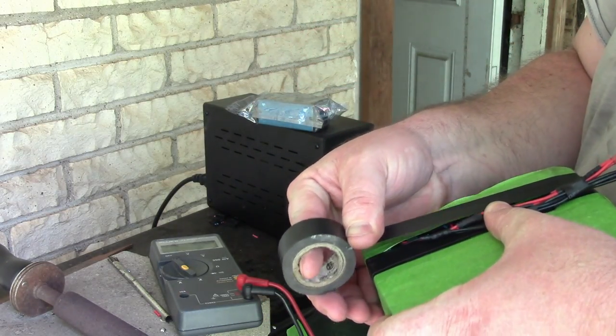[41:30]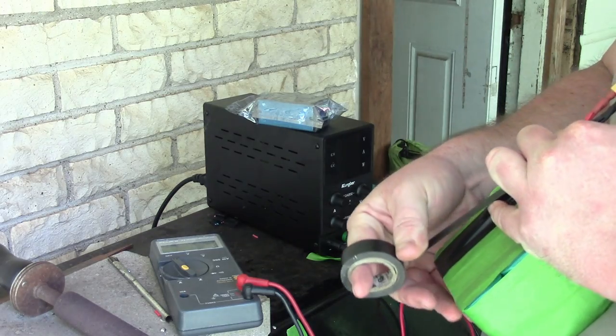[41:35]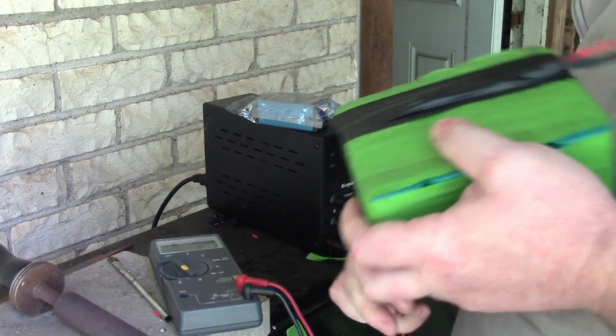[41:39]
I'm gonna get it on this side here. The top of it this time. That is a ton of tape. Whatever. Let's do one more pass on the other side now. I don't care.
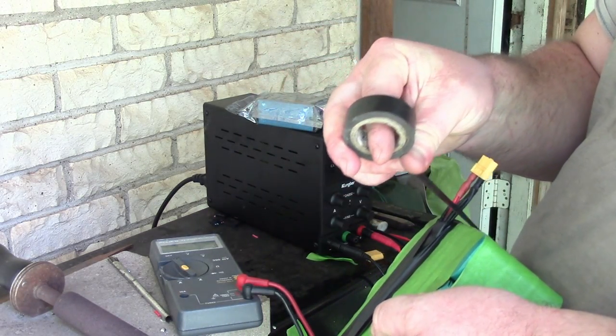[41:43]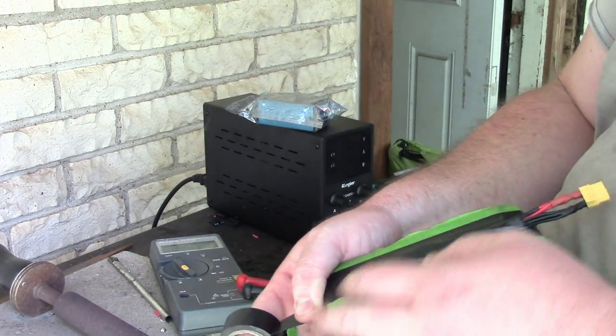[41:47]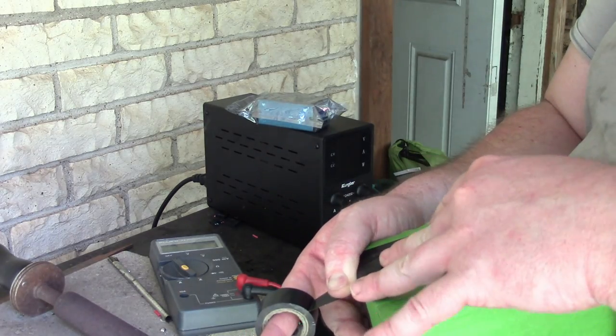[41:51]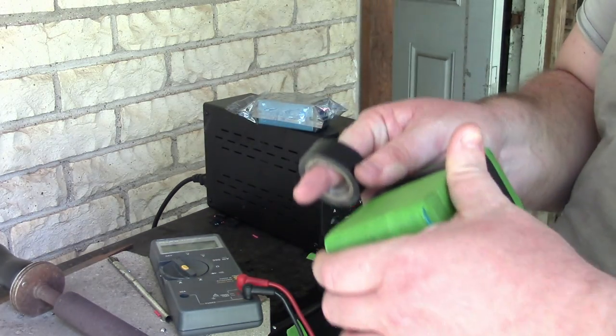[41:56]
Ooh, the majestic sound. The song dog. Have you ever heard a song dog before? All right, cool.
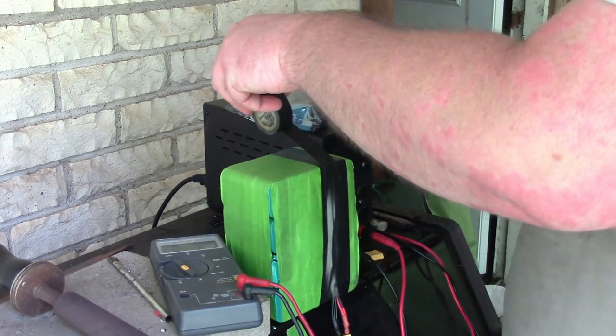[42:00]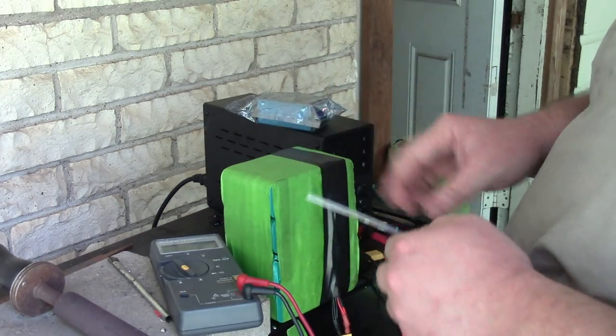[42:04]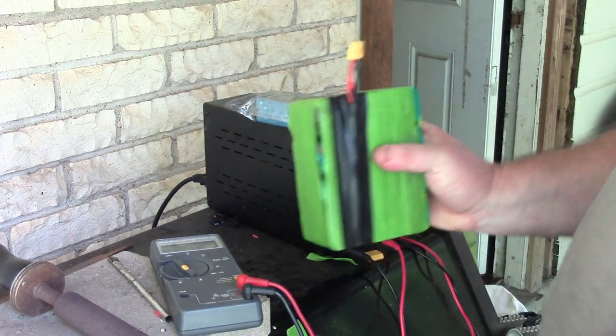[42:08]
So whatever, I'm happy with that. There's quite a bit of strain relief. Now for the boxing tape.
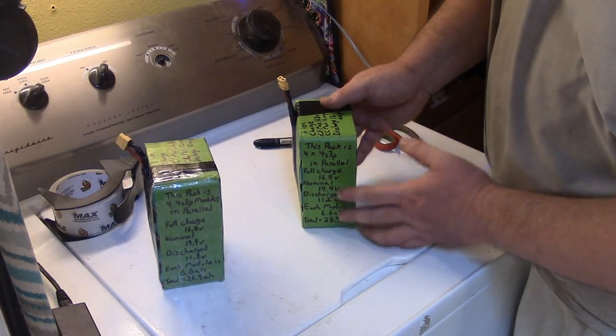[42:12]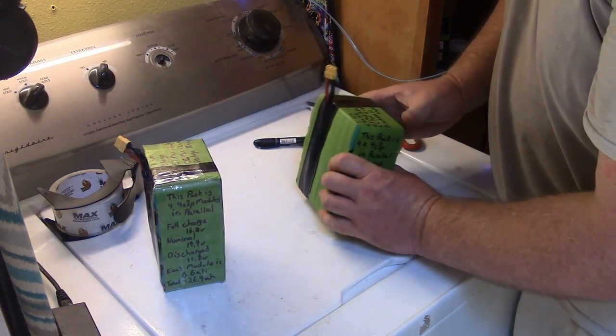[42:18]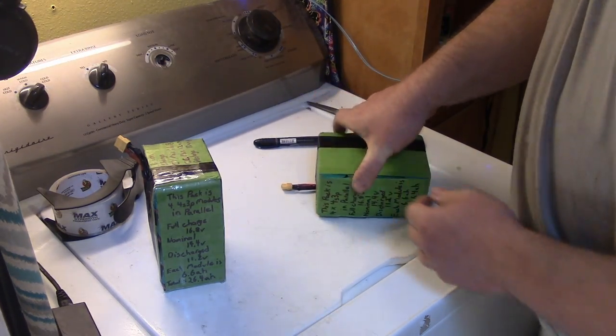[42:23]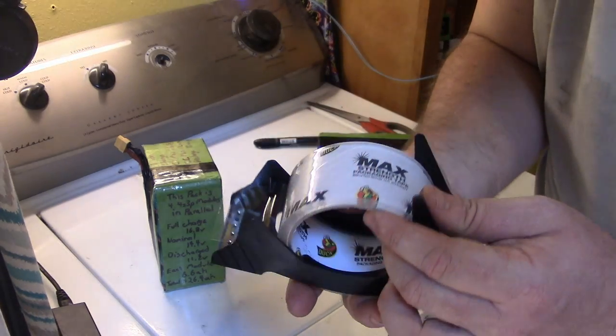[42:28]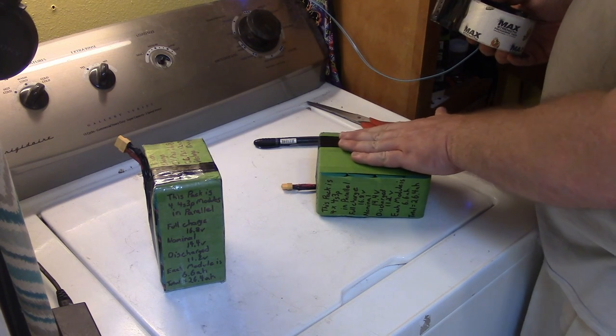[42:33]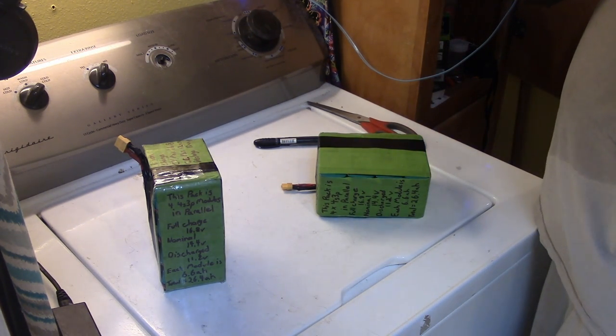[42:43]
All right, so I've transferred all my markings, all the relevant data to this battery, so I know what it is, because you never know, could forget something. So I'm gonna tape it up with packing tape. See how clear this stuff is? I just like it because you can see through it. The problem with paper tape is it'll burn. Plastic tape will melt. I don't think it's that big of a deal. We'll just go for it. I'm gonna overlap this a bit.
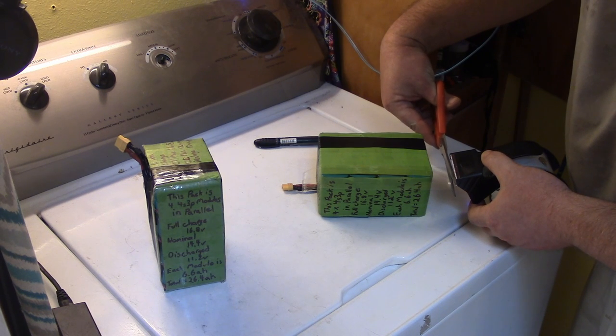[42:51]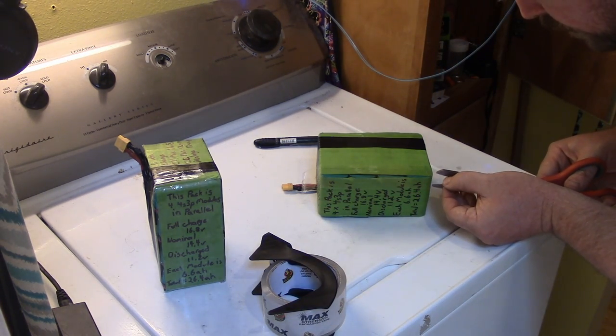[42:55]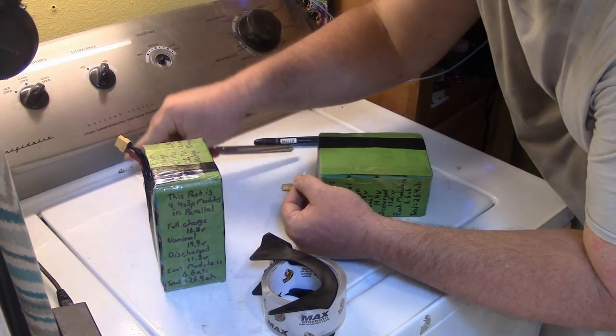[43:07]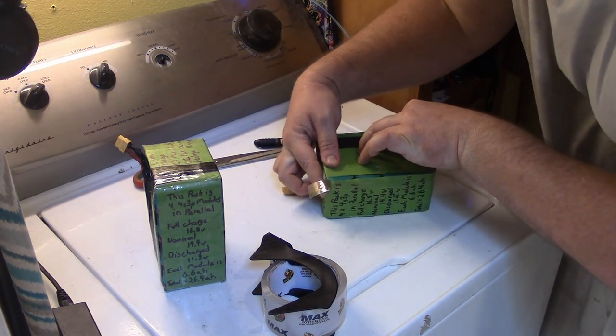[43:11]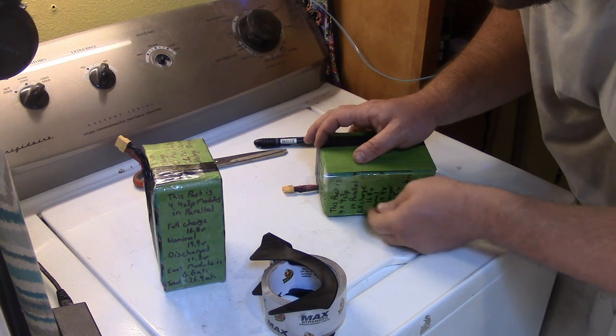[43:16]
Plan to do a little relief cut. So I'm gonna do the corners first. So this corner will go down like that. This corner go down like that. And we'll flop this over.
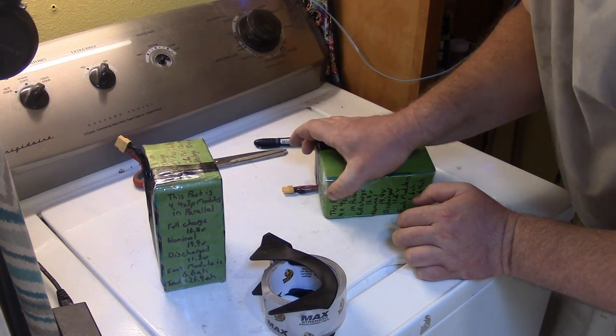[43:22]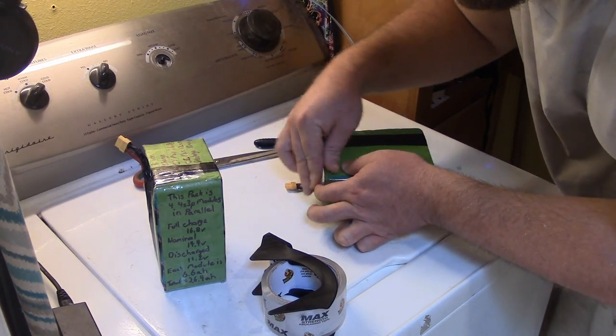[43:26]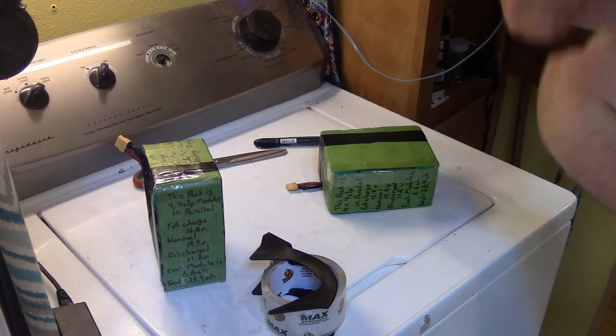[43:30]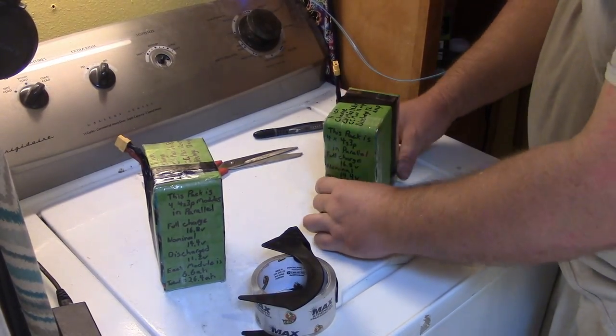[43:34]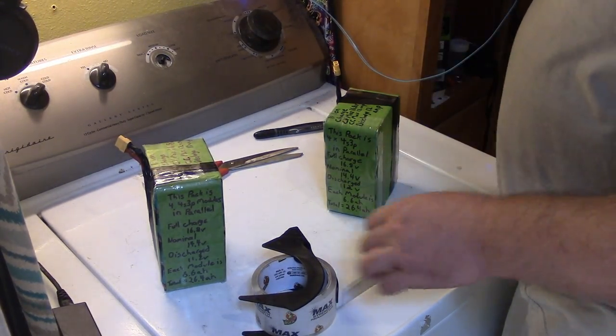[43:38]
Try to work some of the bubbles out, I guess. And wrap it around this way. I'm going to do that to all four corners, and then I'm going to just wrap the whole thing up in the packing tape. All right, got my four corners wrapped, and I'm going to wrap it this way, and then I'll go that way, and I'll call it good enough.
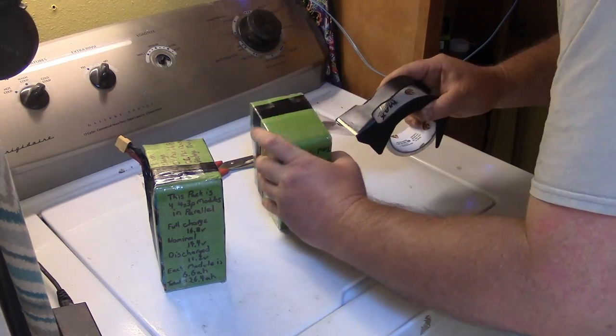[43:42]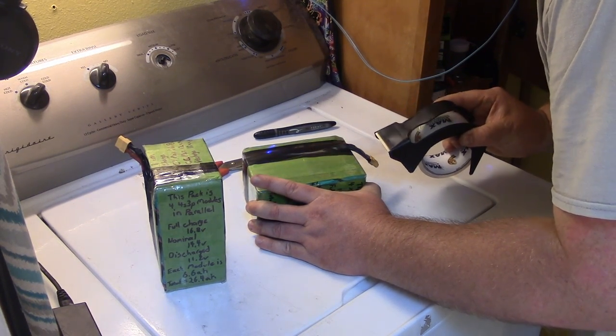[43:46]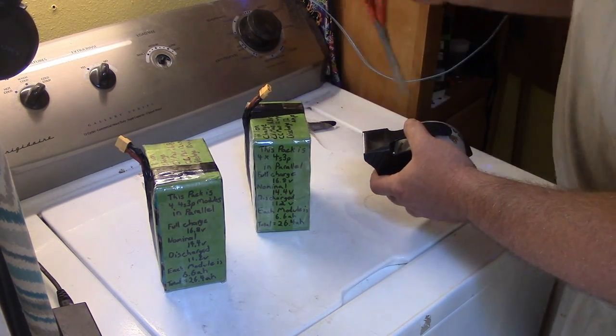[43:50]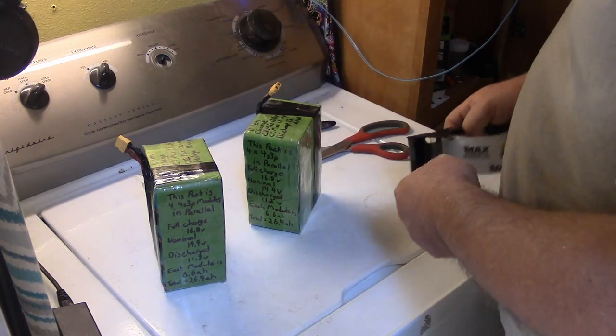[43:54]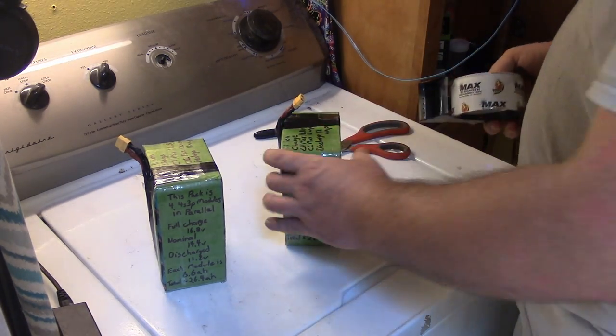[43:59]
Come on, scissors. Why don't my scissors work when I do them stupid? Okay, I'm going to try to wrap it around this too. We'll see how well that works. I'm gonna start.
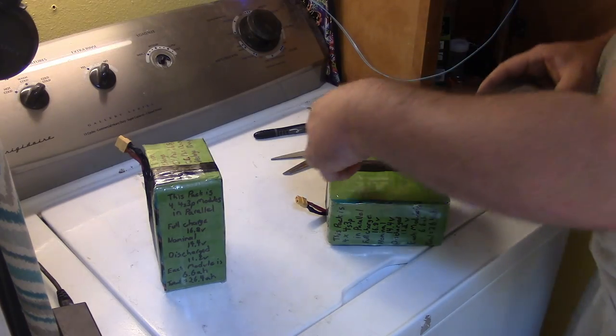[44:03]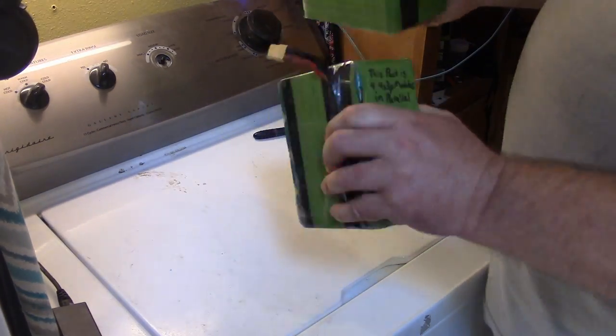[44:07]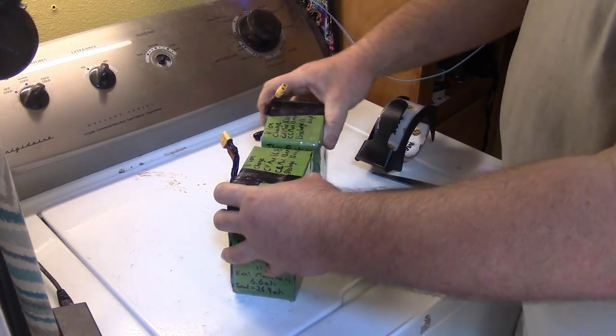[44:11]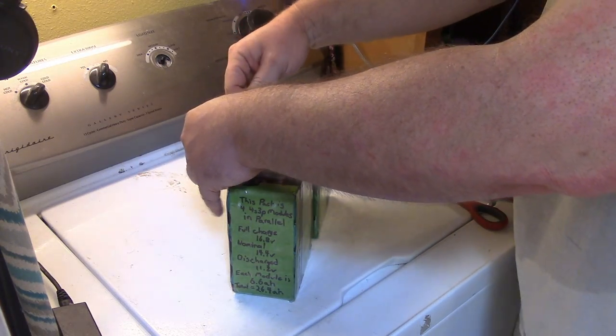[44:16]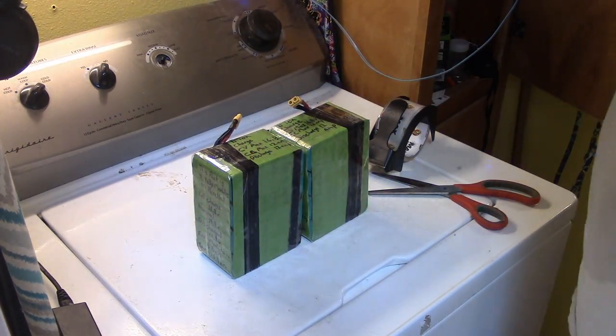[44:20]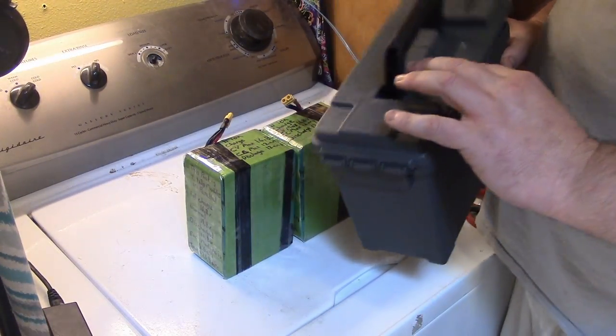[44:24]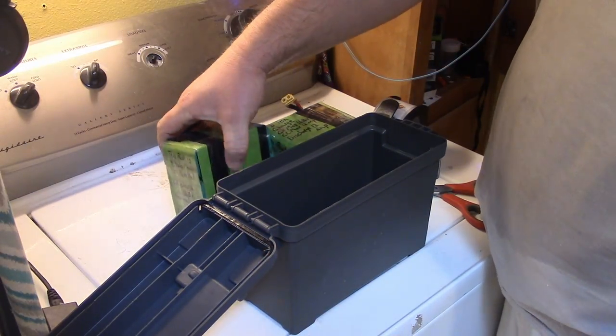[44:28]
Okay, cool. So I have two fairly stable battery packs now that are built in mirror images of themselves, so I can hopefully do a thing. Okay, so here's the challenge. This little $6 ammo box, it's pretty small, and I'm trying to put a lot of battery into it.
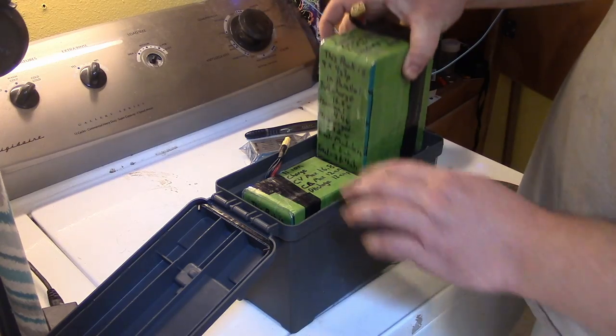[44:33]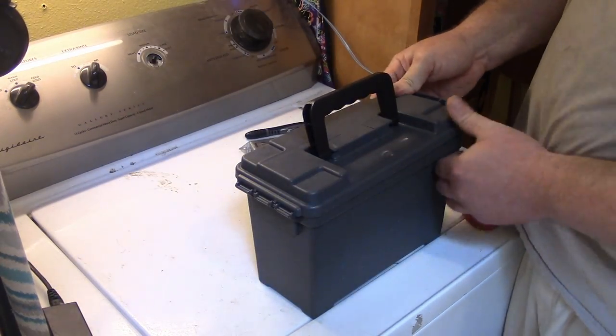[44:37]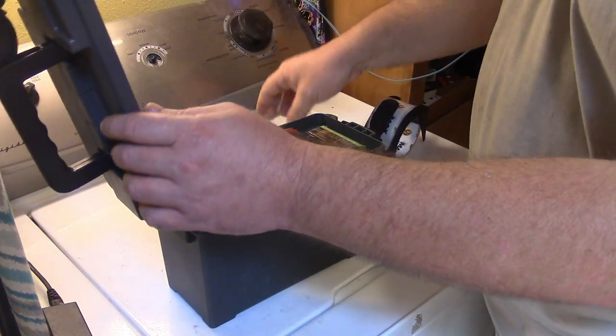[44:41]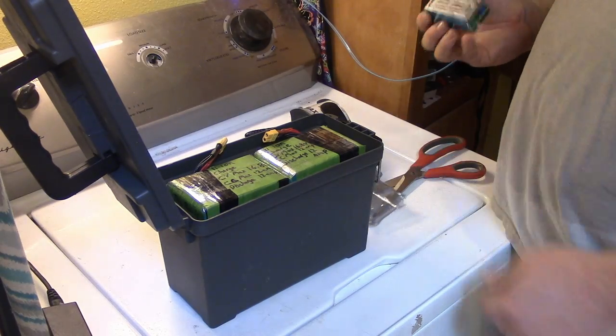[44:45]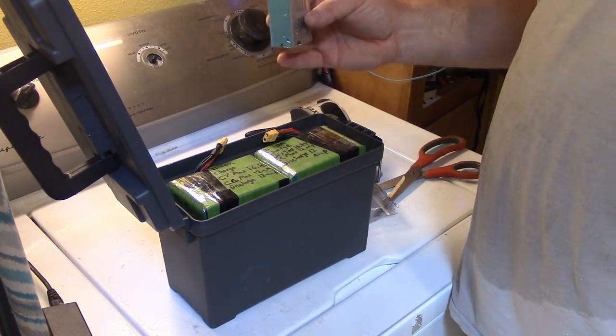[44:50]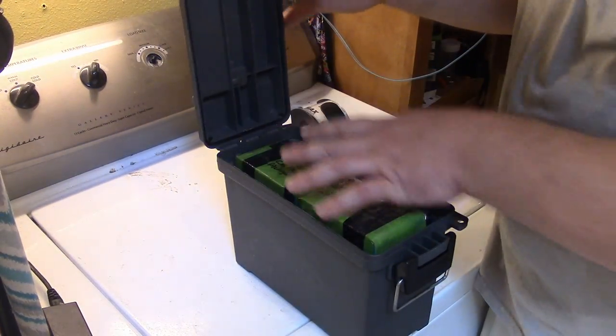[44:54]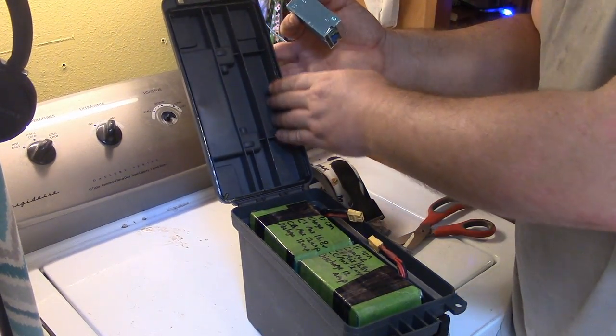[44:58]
The batteries pretty much fill it up, right? So like, there's the battery pack, right? But I also want to have room for this buck converter, so I can bring the voltage down to what the power supply puts out on my CPAP, and it's going to be a tight fit. So in the roof here, there's these little cutouts, right?
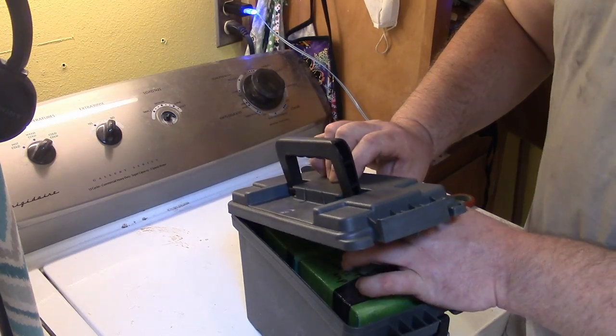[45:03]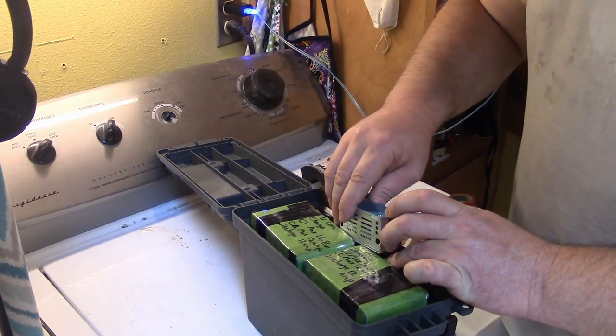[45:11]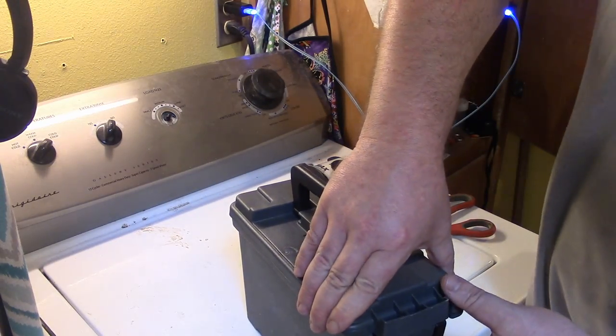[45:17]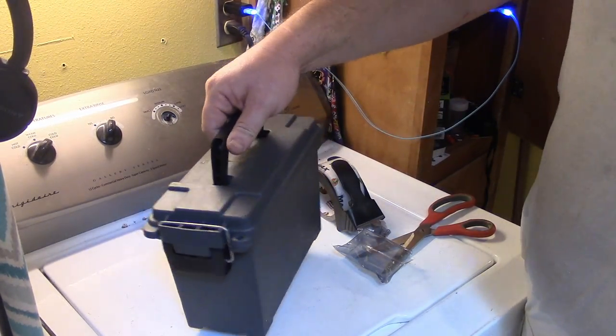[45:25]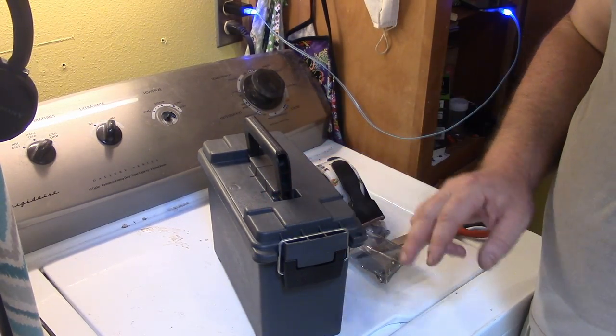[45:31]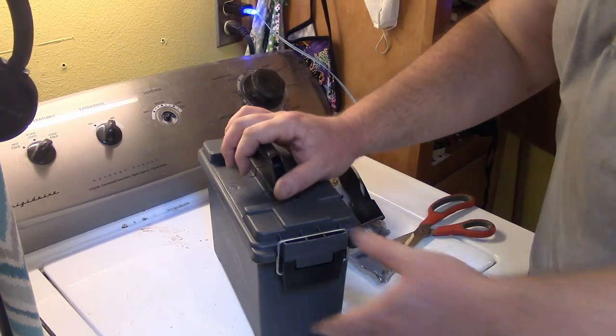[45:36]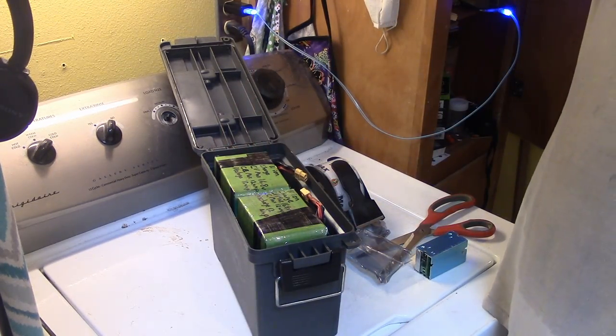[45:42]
And then maybe it'll fit. Let's see. Let me push those down and just cram this right here. We'll see how that goes. Oh, barely. Okay. So it'll be one of those things, everything will have its place and it'll just barely fit. And then on the outside, I think I need a switch on off, and then I'm going to mount my cigarette lighter ports somewhere.
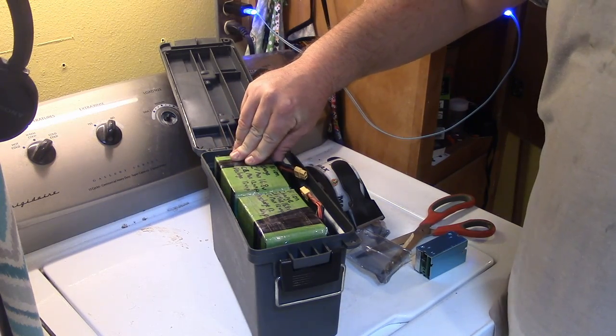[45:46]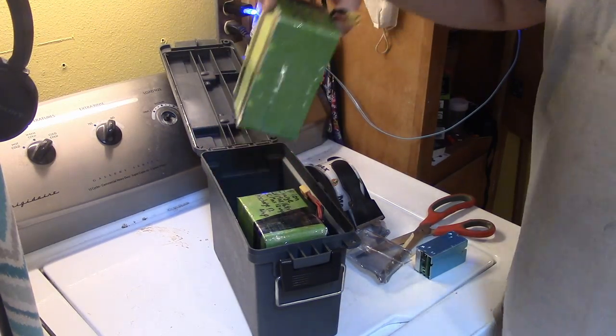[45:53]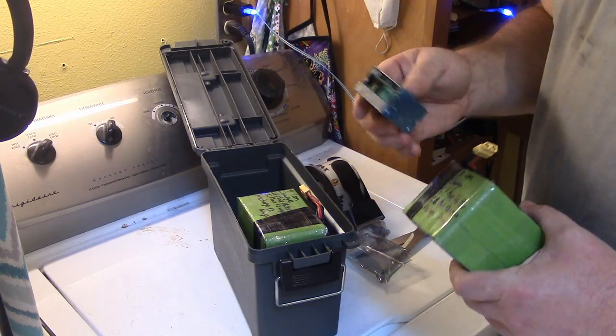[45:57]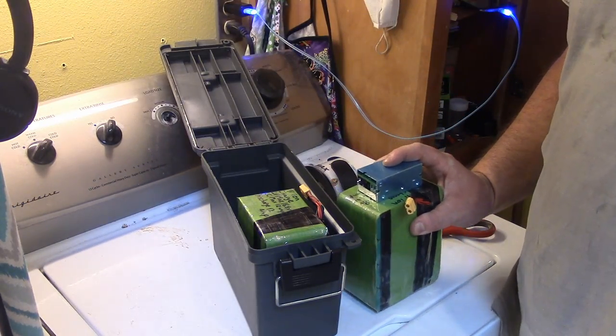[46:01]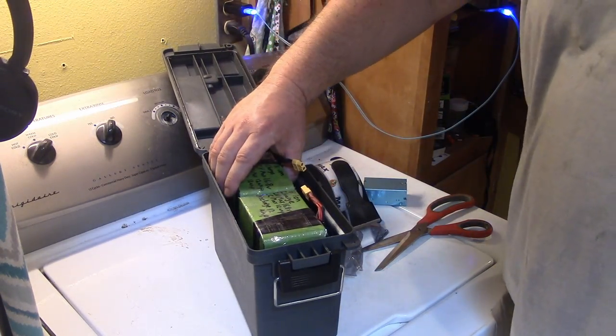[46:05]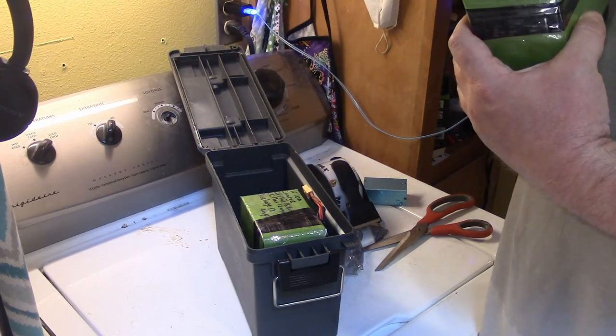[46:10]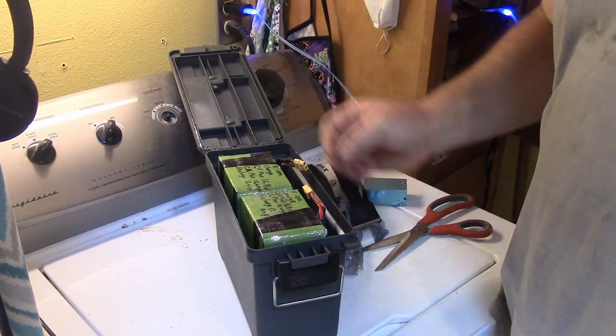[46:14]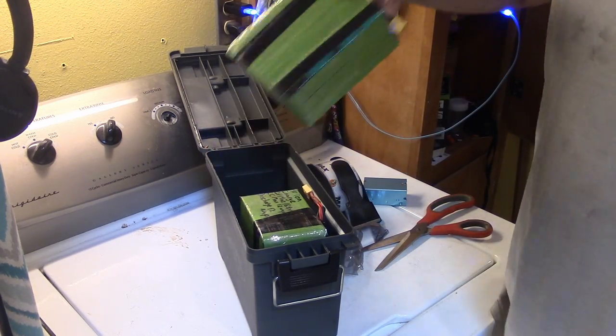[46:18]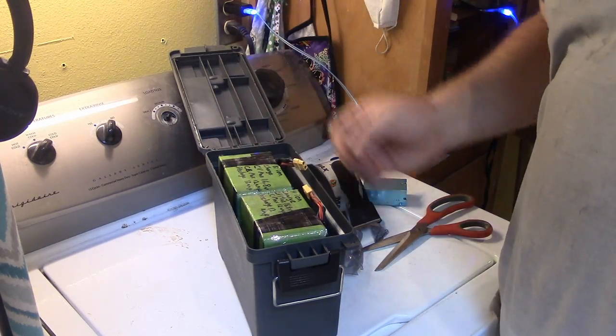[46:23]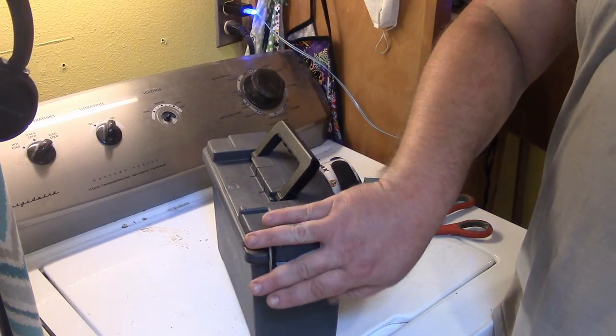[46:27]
The rationale behind having two packs is, you know, it's easy enough to do. And also, I live in Texas. We've had power blackouts. My mom uses a CPAP and I use a CPAP. So I was thinking, if the power goes out, I could just take one of these packs and another buck converter and I could pass it on so she could run her CPAP. And if not, I have a massive, how many amps did I say this was? 26.4. Yeah, man. So I have, what's that, a 32.8? No, I'm stupid. 52.8 amp hours to run mine on for, I don't even know how long this is going to last.
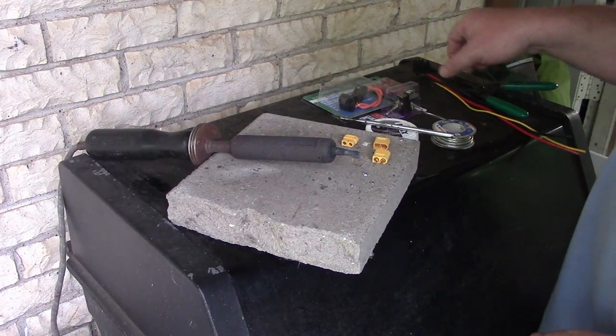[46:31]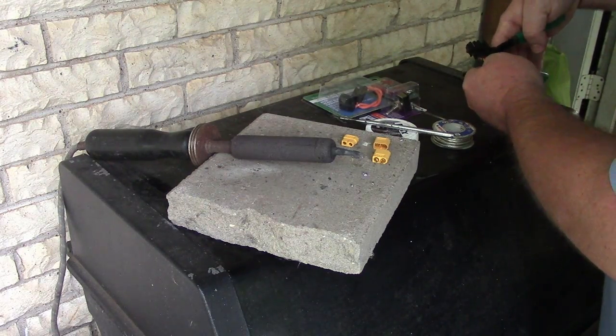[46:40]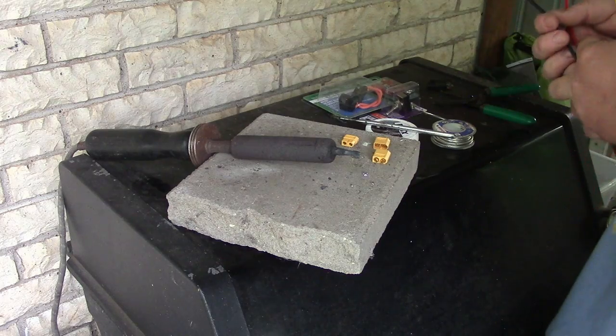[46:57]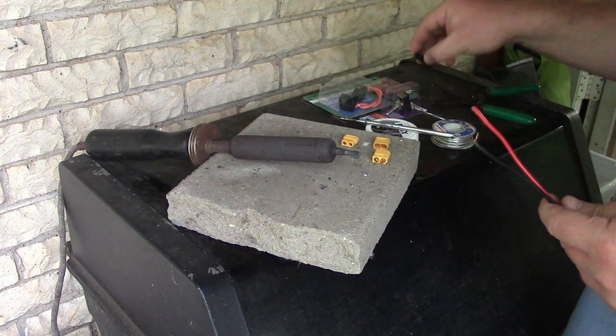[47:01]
Alrighty, so I'm going to work on my parallel cable. I salvaged all the wire that I've used in my battery projects recently. What I was working with for the actual battery pack was wire that came out of, oh my God, these cable cutters suck. It was wire that came out of a computer power supply. And this was a plug off of some trash I found. That's 12 gauge.
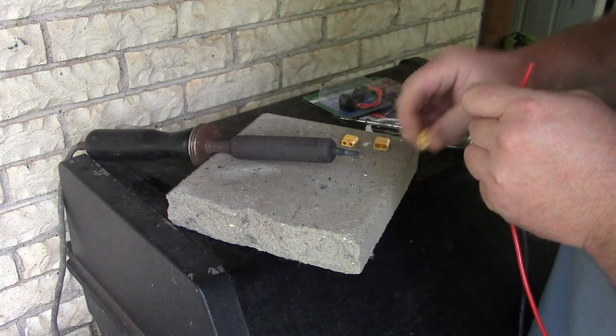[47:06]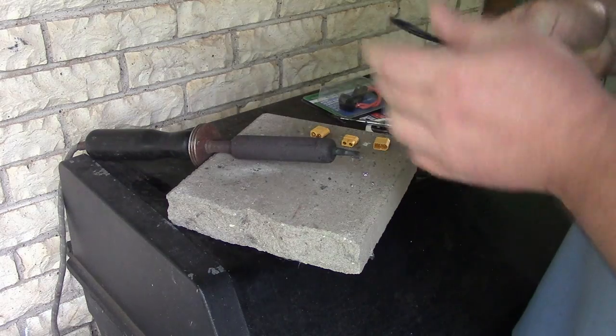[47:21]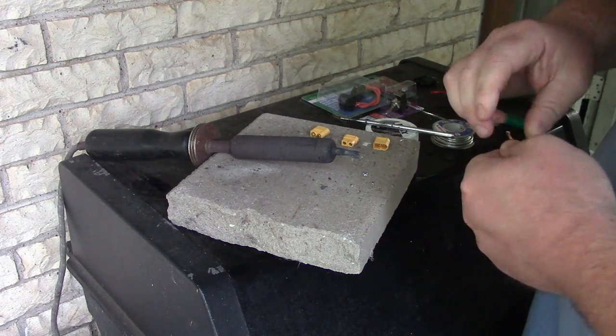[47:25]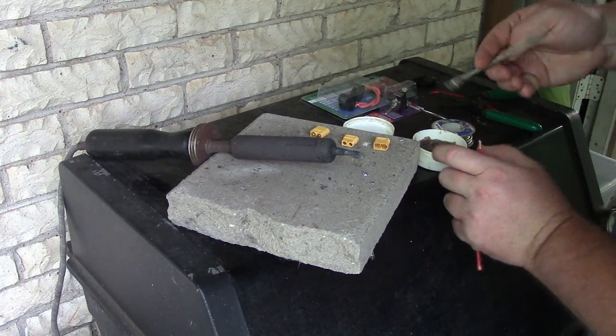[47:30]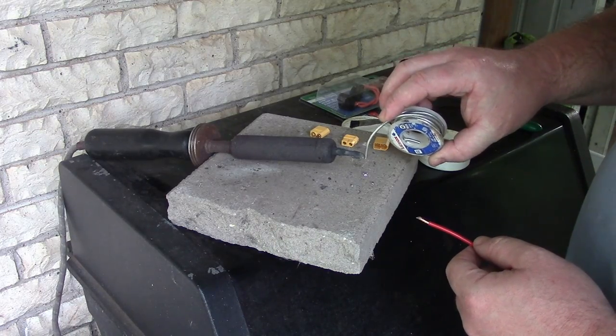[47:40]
I wonder if that's too big. I think I can squeeze two 12s in here. Okay, we'll try it. So I'm just gonna cut this little length in half. Might be easier said than done with these wire cutters I'm using. Okay, so for the single strand, I've really found it useful to just braze these a little bit. So here's my flux. I'll just put a little bit of that on there. Got some lead-free solder. Let's see how that works.
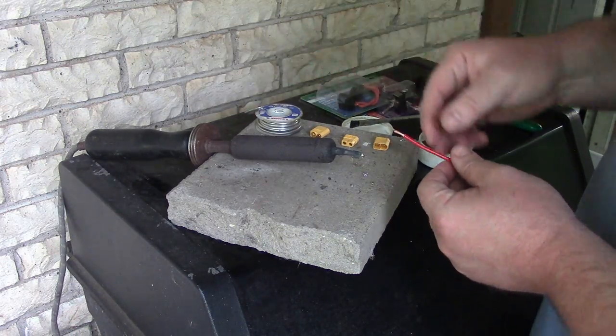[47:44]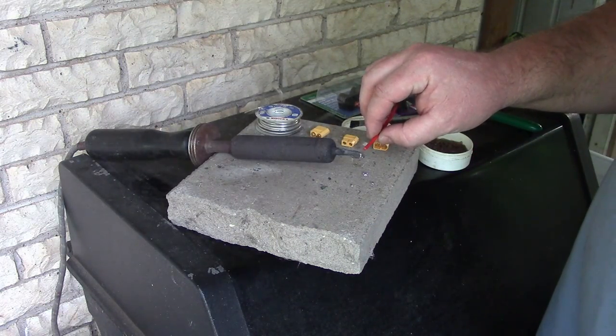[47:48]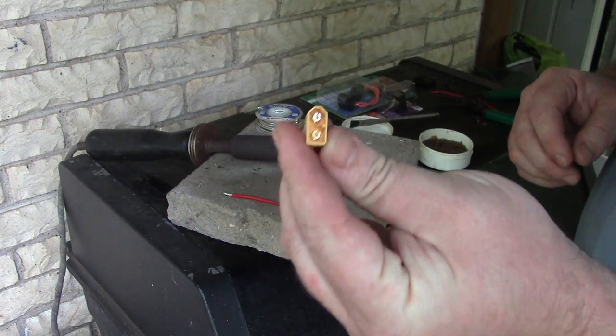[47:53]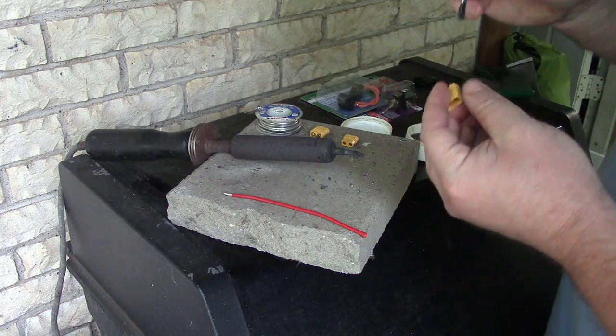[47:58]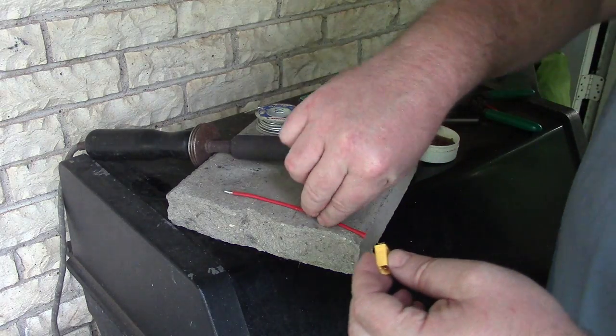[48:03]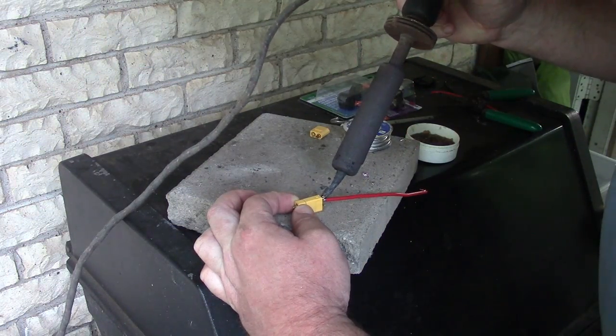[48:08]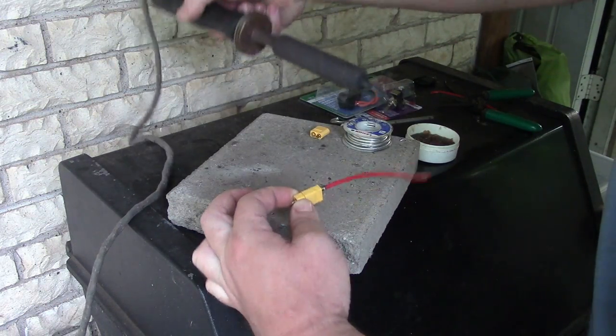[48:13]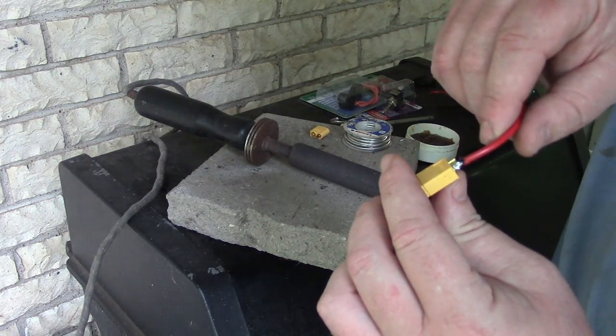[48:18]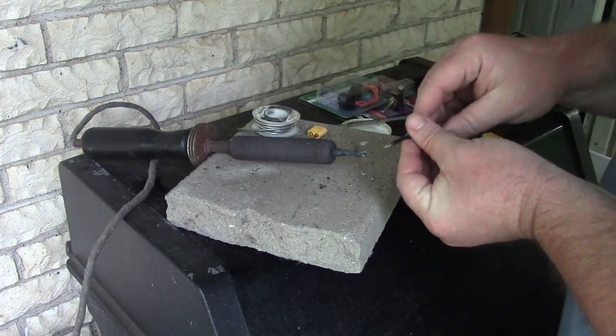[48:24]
And then I need, okay, the male end, which looks like this. Let's find the positive. Okay. And I'll cram that little puppy in there. Okay. So then, there's one connection. Oh, that's a huge glob. Maybe I'll go back to my other solder. I liked it a little bit better.
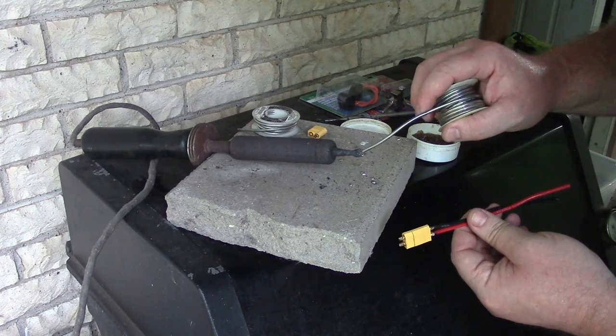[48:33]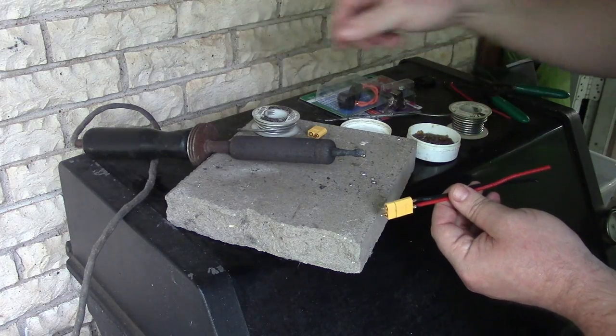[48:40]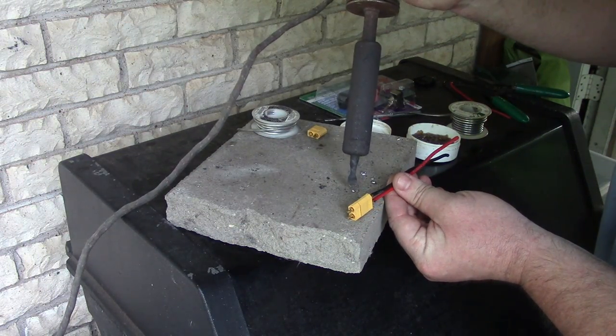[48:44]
I really need to get a sponge so I can cool this big sucker off. All right, so here's some different solder I was using. I don't know what this is. It's probably lead-free too. Can I pick that up? Oh, my iron's so hot. Go ahead and pick that up. I can't pick it up. I used to could.
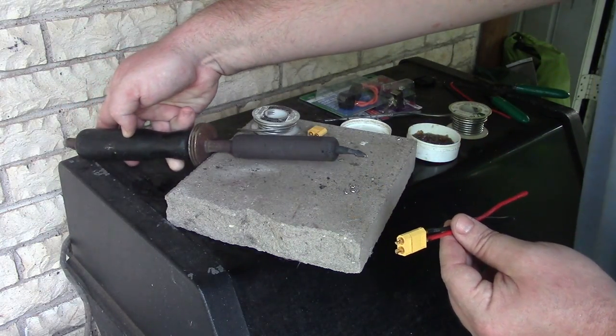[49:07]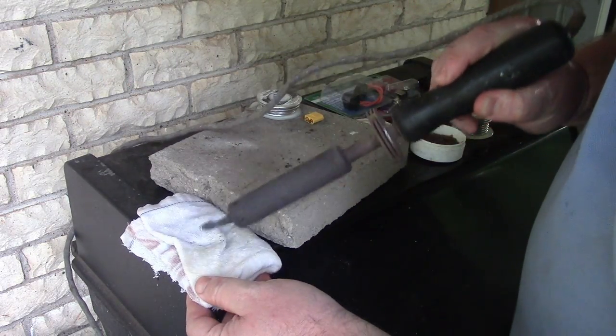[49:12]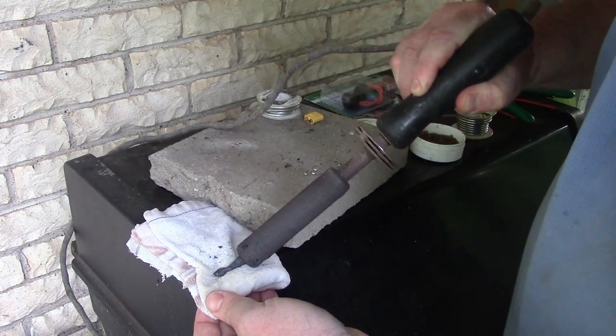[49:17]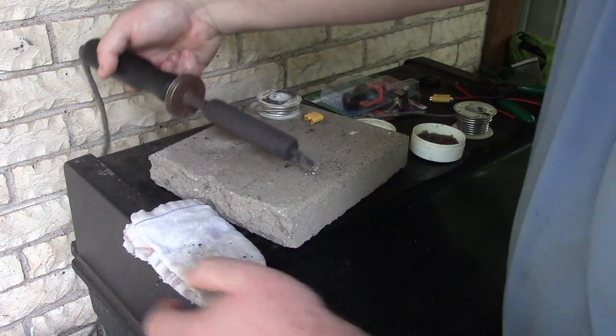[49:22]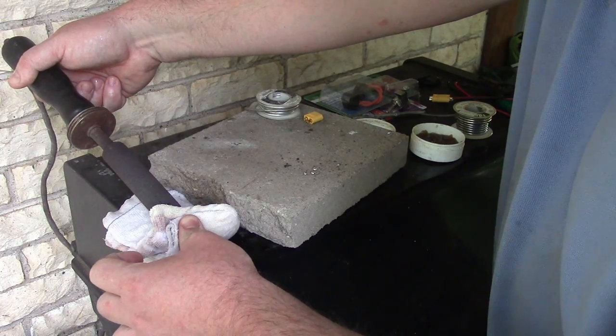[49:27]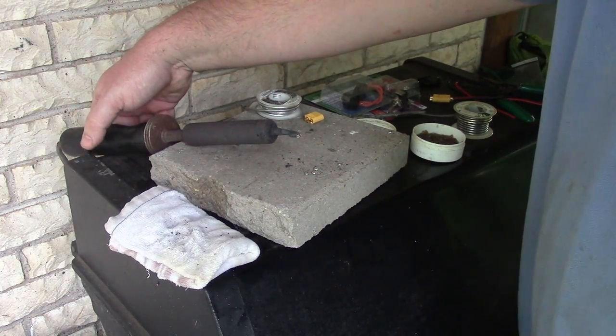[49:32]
Okay. I gotta cool this iron off. Okay. So here's a sopping wet shop towel. Put a lot of water on it. You're gonna cool it off drastically. God, it gets so hot so fast and I don't use it quick enough. It's all grungy.
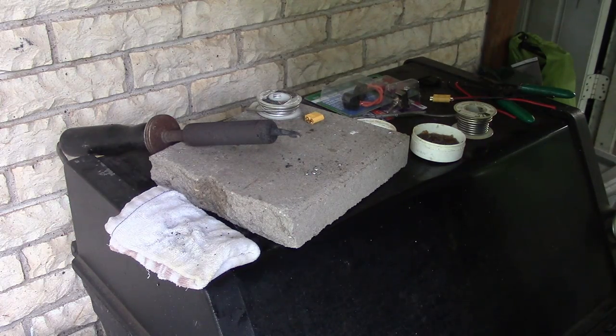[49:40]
Every time you try to film, people talking, dogs barking. Holy crap.
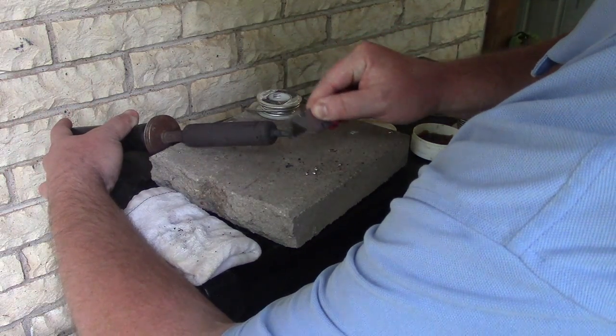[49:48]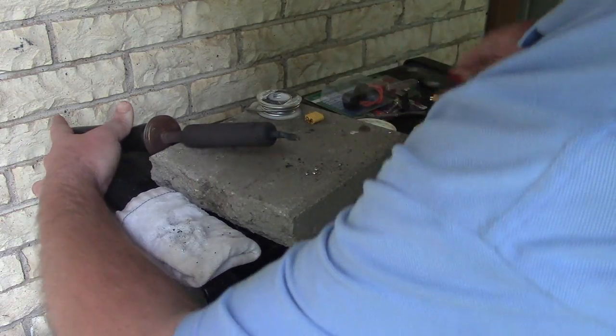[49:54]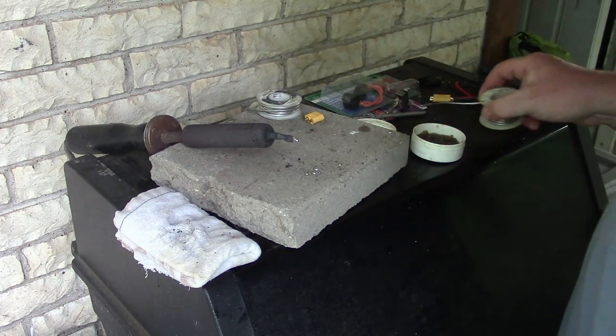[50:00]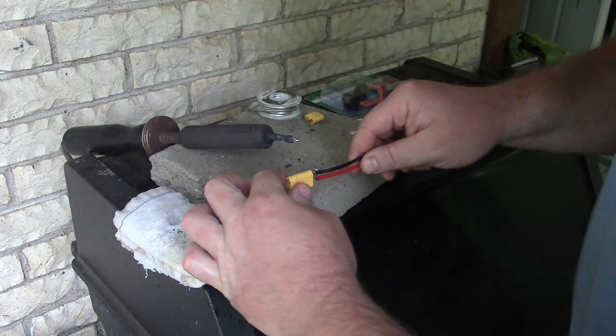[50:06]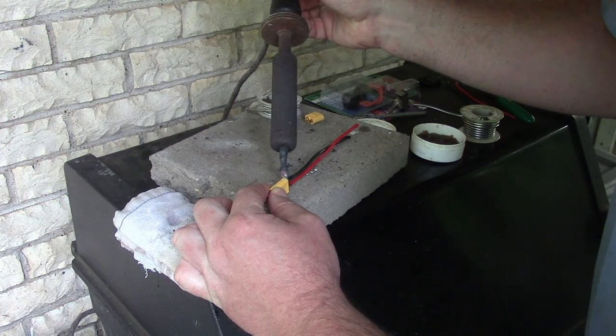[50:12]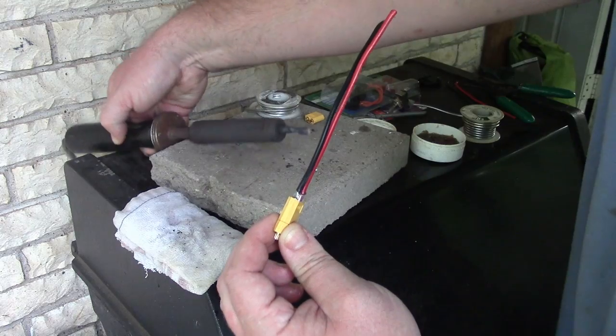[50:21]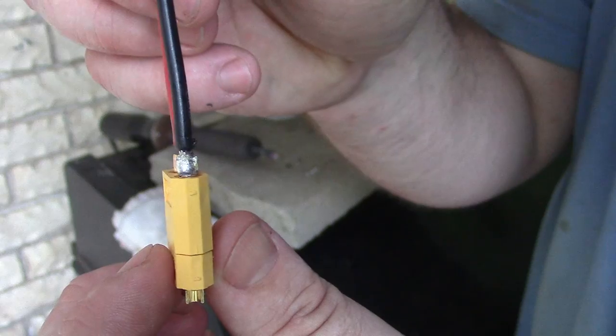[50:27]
Let's just see if we can do a quick little clean up. Okay, whatever. Now, is that still hot enough to melt stuff? Hell yeah, it's holding a drop. Very good. We were working on the negative. Come on. Oh yeah, there we go. That's a good one. Okay. That's what I want to see. See how that just totally melted in there?
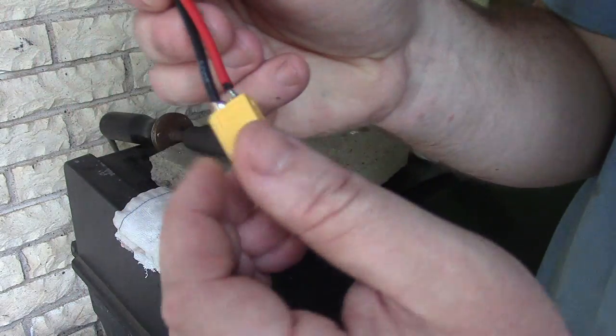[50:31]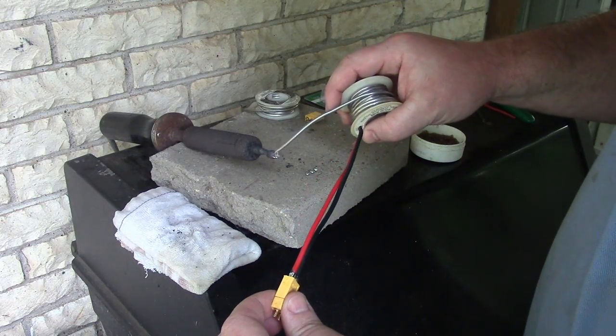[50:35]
Problem is, I got a big blob on the back I'm going to have to deal with. But let me try resoldering this side a little bit. Put a little bit less on this.
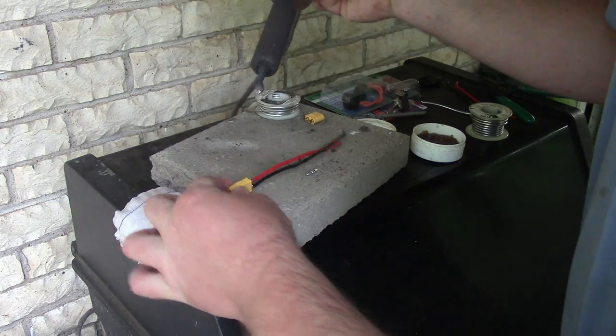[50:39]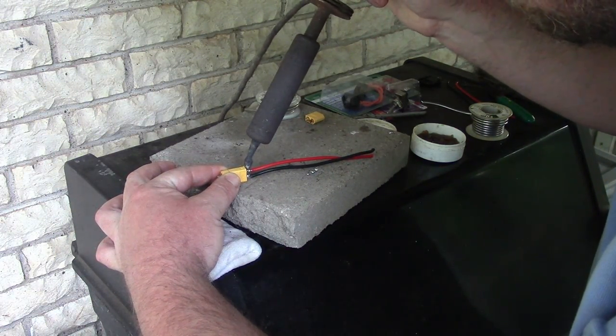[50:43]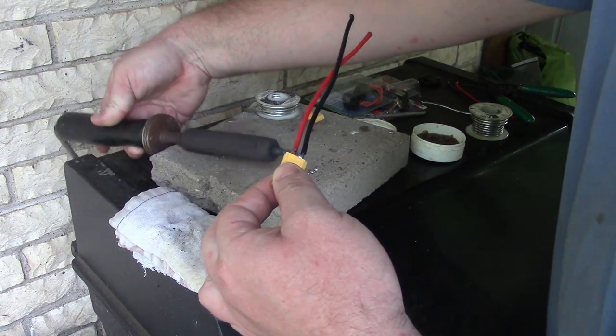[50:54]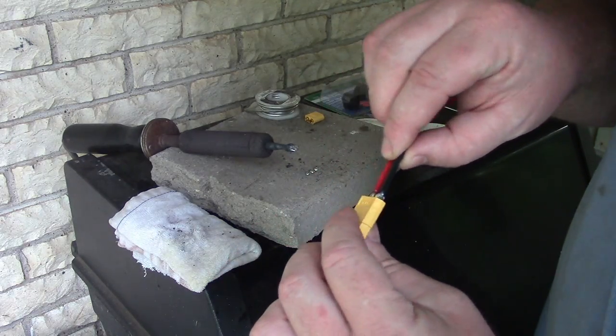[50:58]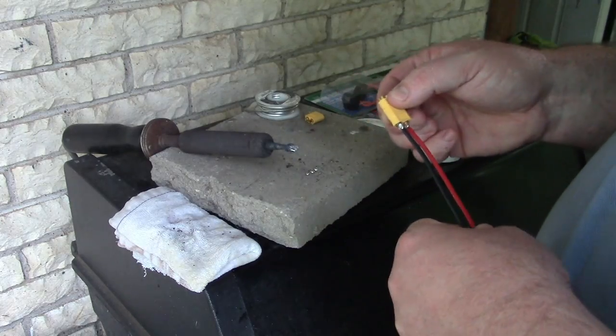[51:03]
Melted. Nice. Okay. Positive is perfect. Negative is a bit too much lead. I'm going to nip that off. We'll get to that later.
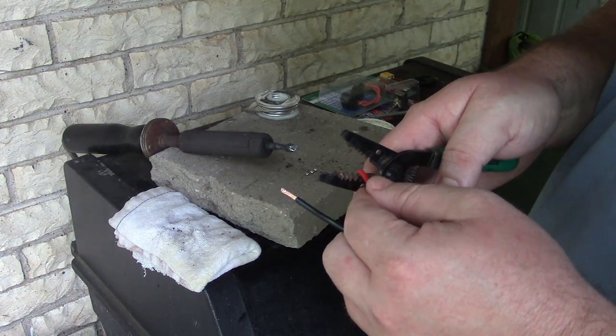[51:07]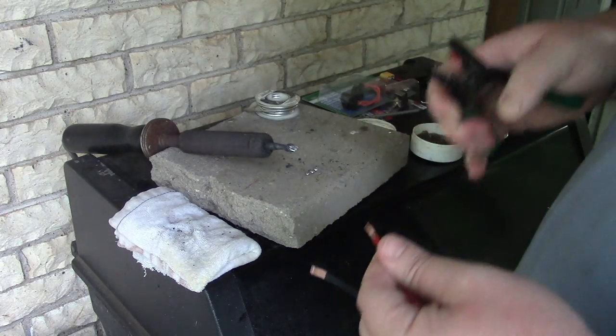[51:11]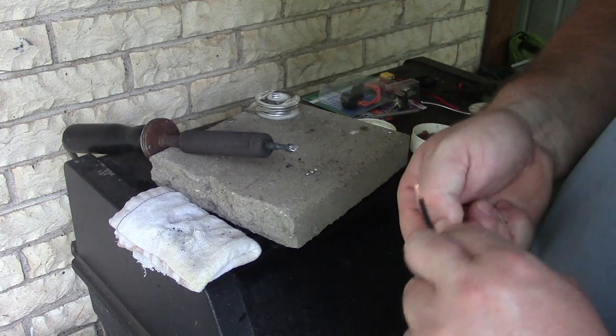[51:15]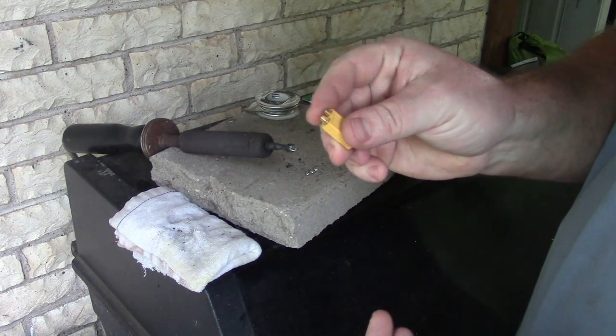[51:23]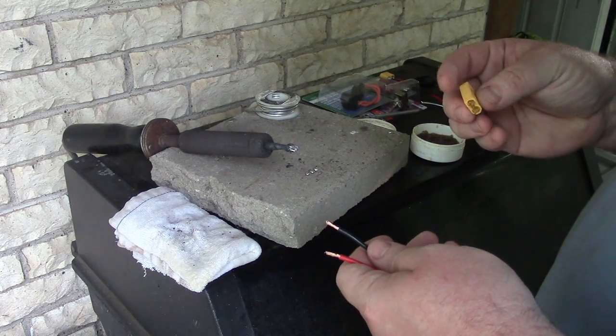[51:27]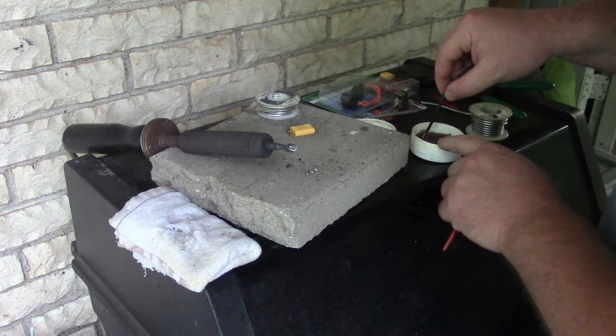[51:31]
So again, I'm using a 150-watt soldering iron to do these connectors. When I use the 35-watt iron, it doesn't have enough heat to melt the solder before it starts melting the housing. So that's why I'm going through the hassle here. It just works better for me. Maybe I need to get a soldering iron that's younger than I am or something.
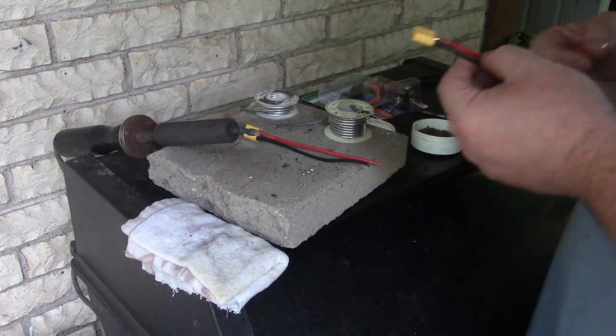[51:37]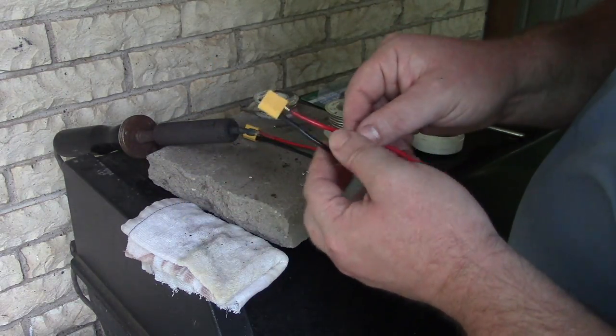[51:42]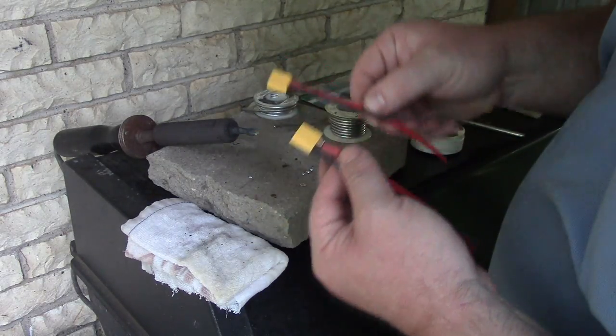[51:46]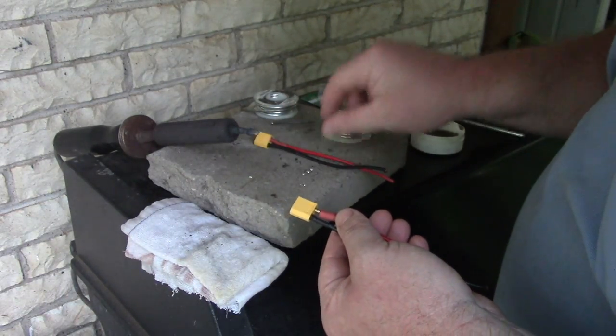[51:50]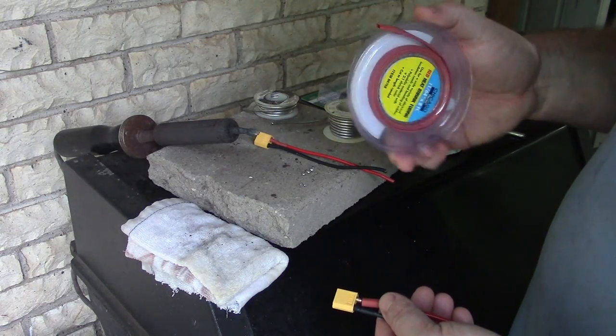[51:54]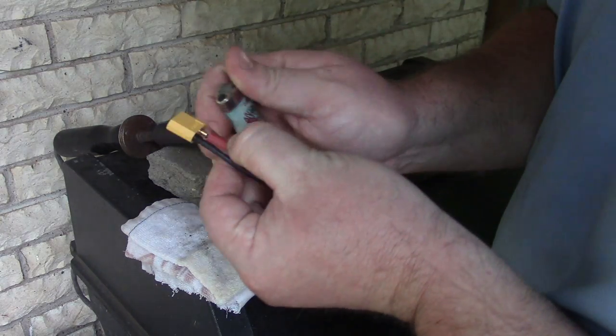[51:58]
I don't know. Okay, so let's just finish up this heat shrink real quick. We got my last piece I need to do. I don't know why I insist on color coding my heat shrink, but I am. I bought a box of black heat shrink and a roll of red heat shrink from Harbor Freight, right? But it doesn't quite fit. It's a little too big to go inside these notches.
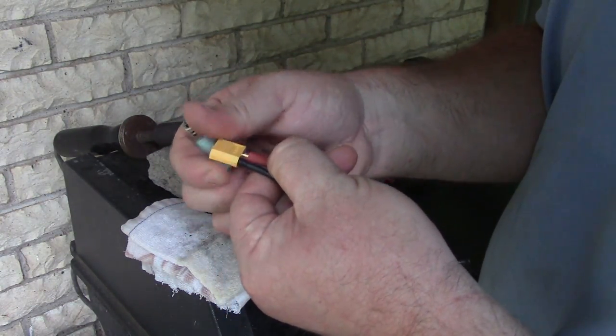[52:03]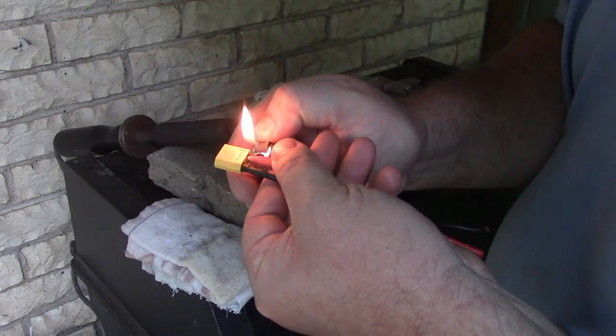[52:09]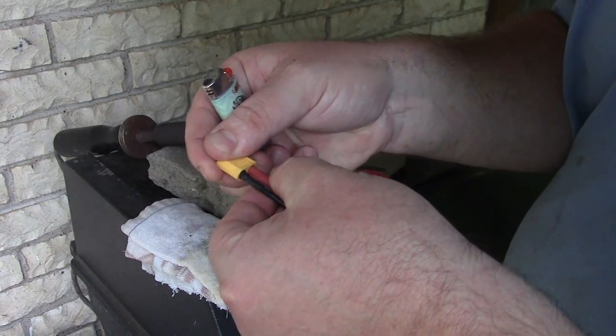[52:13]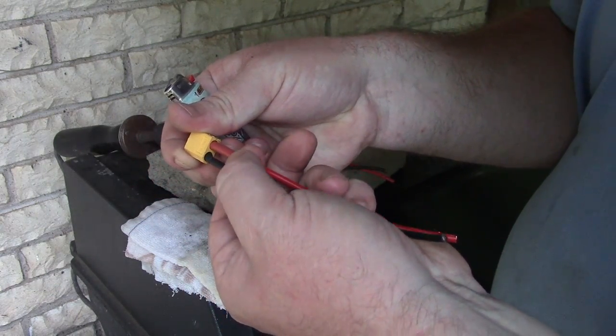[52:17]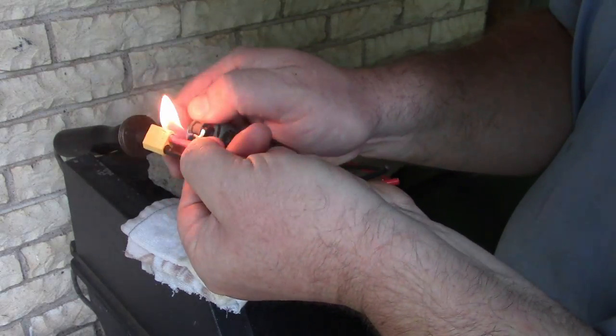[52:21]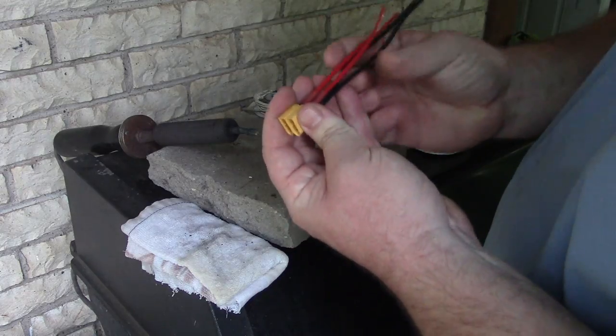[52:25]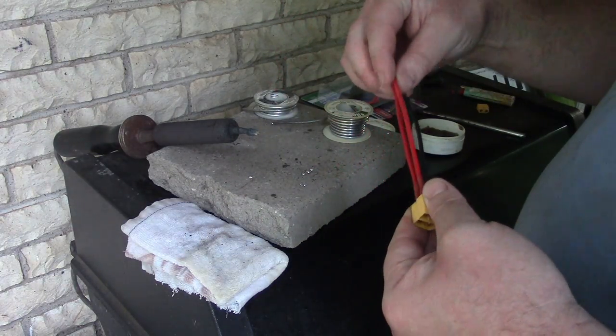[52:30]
I know I've already explained it in this video, but I'm just going to do it one more time. Shrink it down a little bit on that side. Shrink it down a little bit this side so I can twist it and fit it in. Then I'm holding it in place with my fingers while I shrink it down small enough it won't slide around on me.
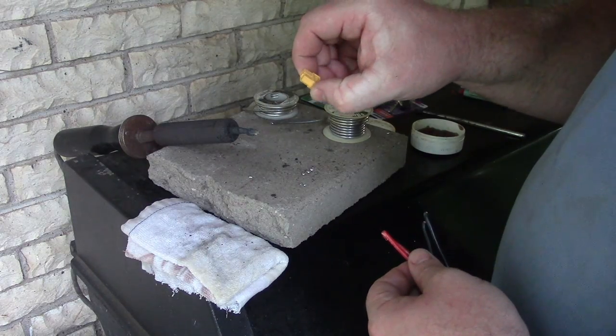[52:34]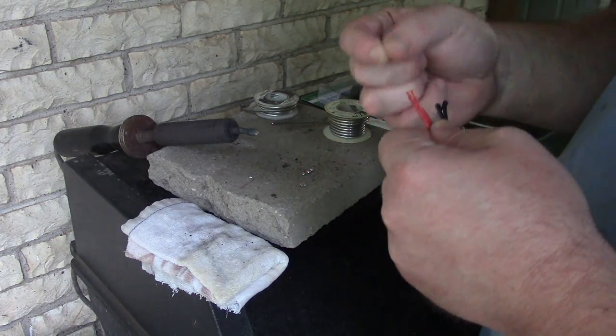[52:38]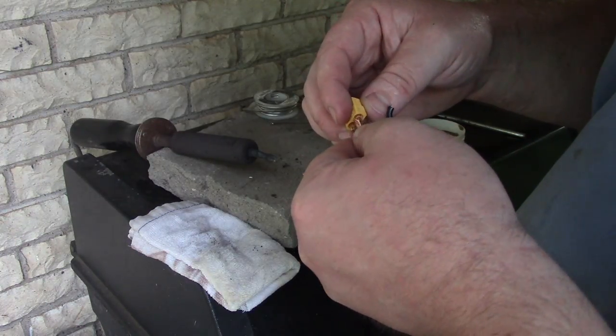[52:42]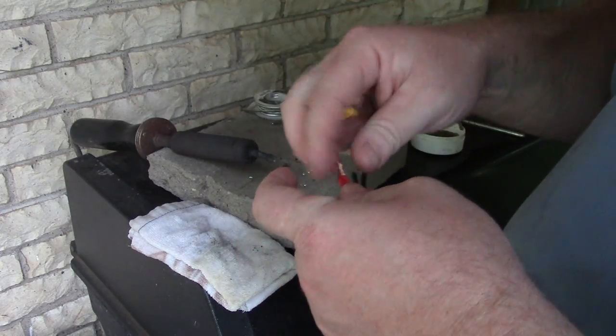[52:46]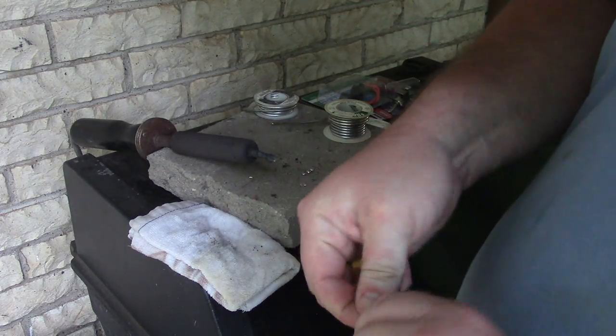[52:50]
I have the two connectors for the battery, and now I'm going to try to cram these two 12 gauge wires into this XT60. I've done it before. It's not easy, but we're going to do it. Oh my god, it's not going to fit. Okay, this is too much wire for this connector. Gosh. Now it's my dog being a butthead.
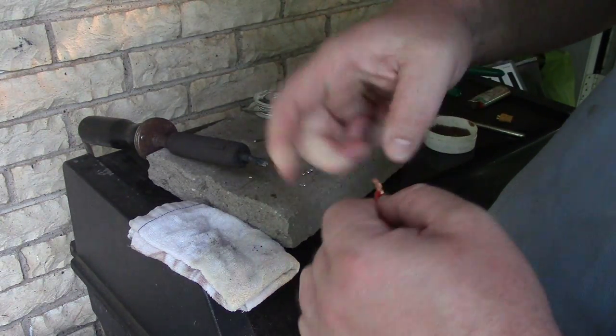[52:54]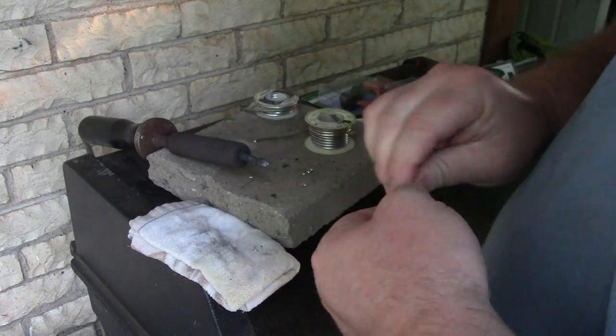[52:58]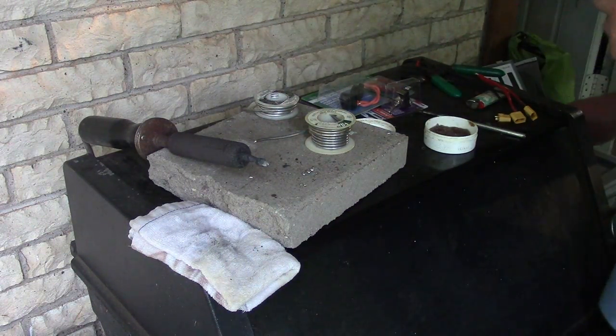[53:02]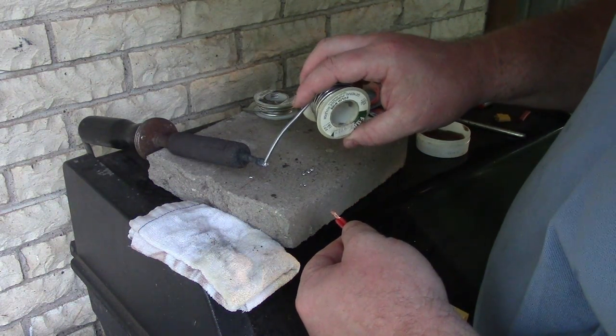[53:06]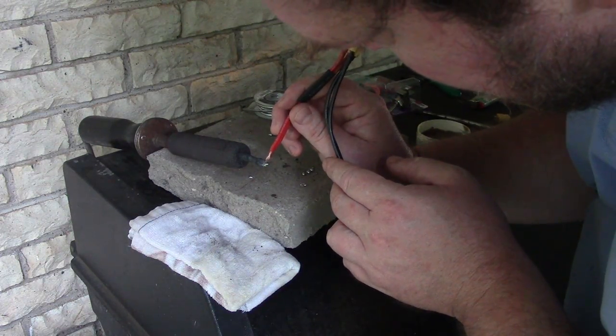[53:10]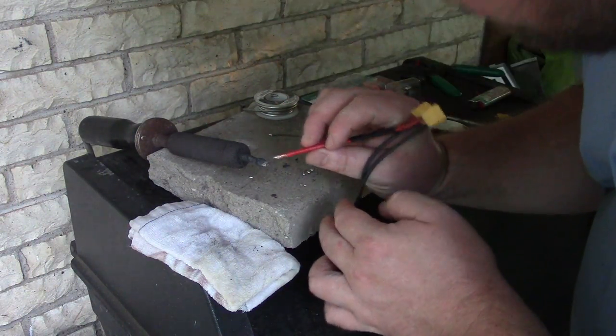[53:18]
I'm going to twist him up a little crooked. So skinny on the tip. Look at that. Okay. Need heat shrink. Let's get a little solder in here. Let's just try it one more time. We're just going to let the solder work its way up the copper. Nope. We're not. Because it doesn't work that way. The world doesn't work how I think it should.
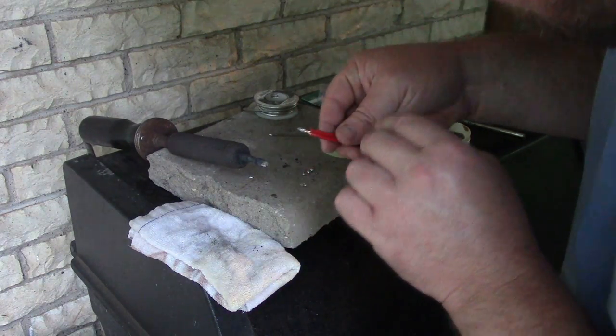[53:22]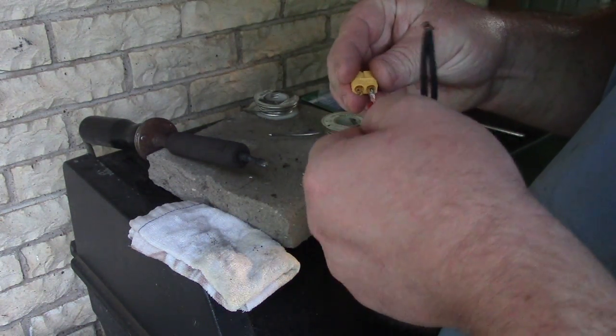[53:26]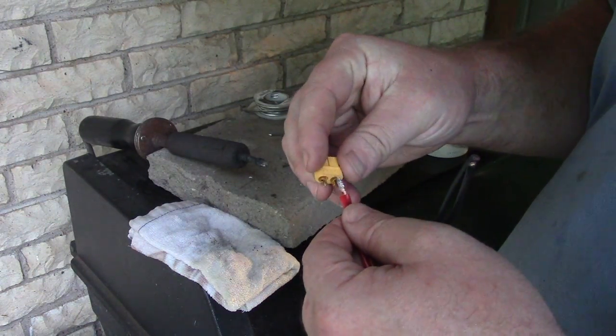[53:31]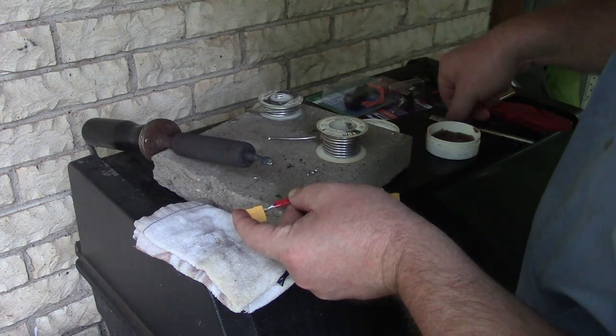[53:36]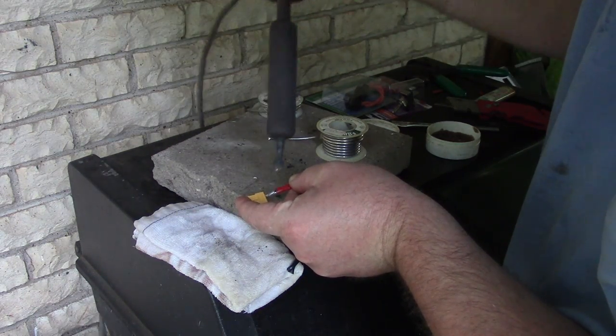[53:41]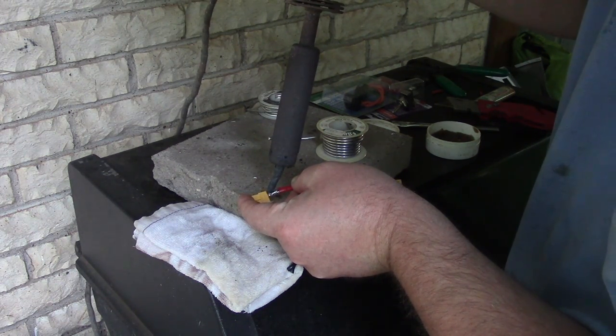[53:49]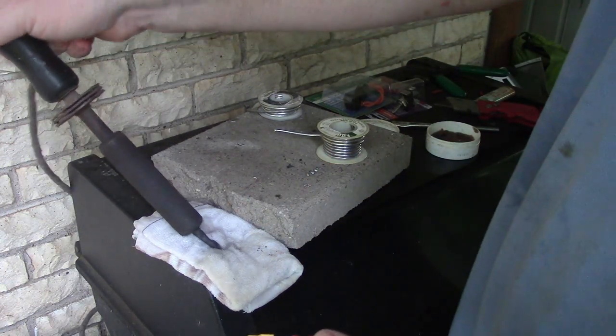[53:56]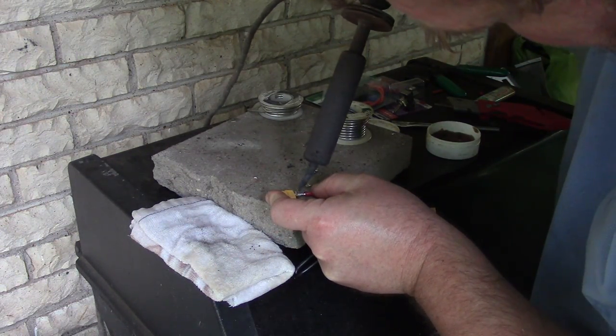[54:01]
So then we're just going to solder this thing to the edge of it. Okay, let's just see if we can solder this to the outside of this thing. Whatever. Let me put a little more flux. I don't know what I'm doing. Okay, that wasn't enough. I got it hot as hell though. Okay, I'm going to try one more time. Oops, I can't even reach it. Don't lose all your solder on the outside.
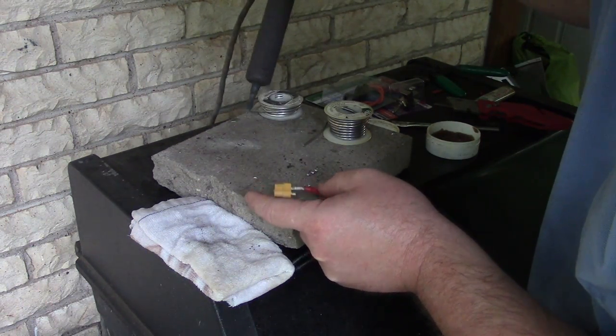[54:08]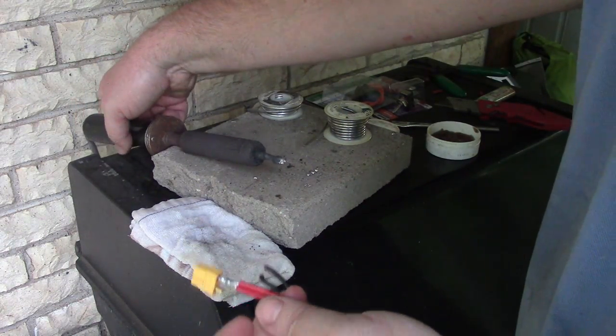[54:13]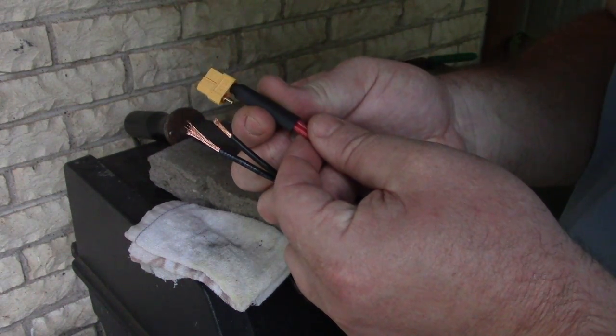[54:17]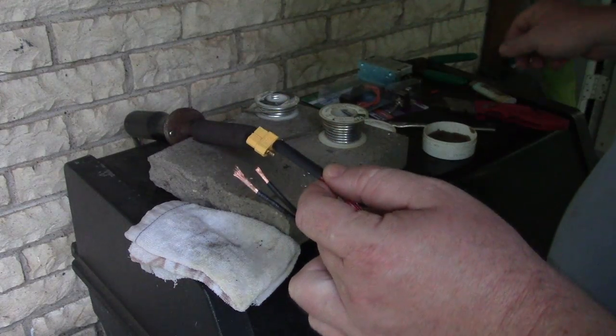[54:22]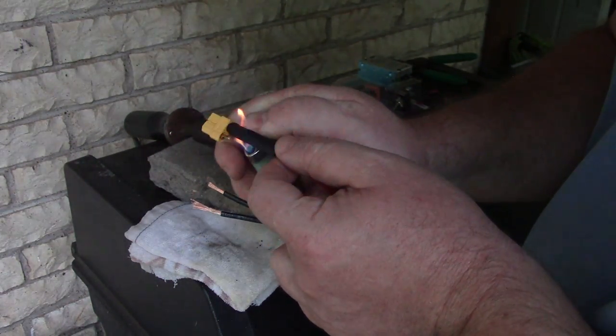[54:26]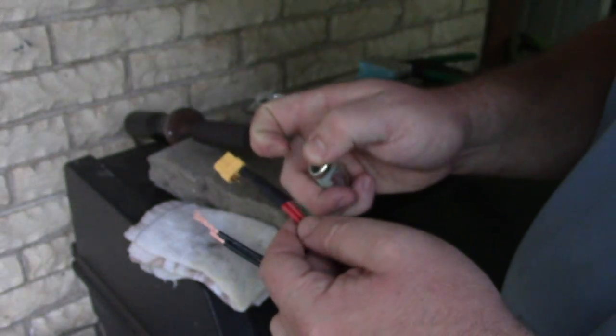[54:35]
Okay. Oh, yeah, we're connected somehow. Okay. You see this? That massive piece of heat shrink. It fit inside, so I guess that's going to work. Hope that connection's okay. It's going to take a lot of shrinking. Wonder if I should get the heat gun out to make this work. Now this is good enough.
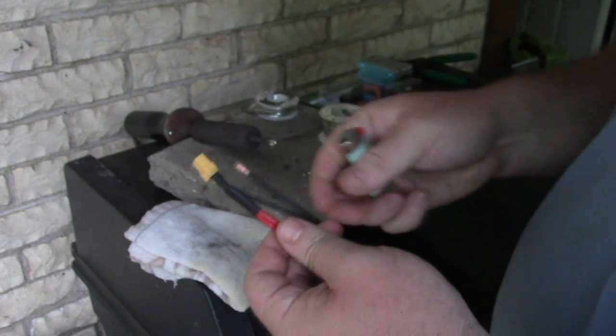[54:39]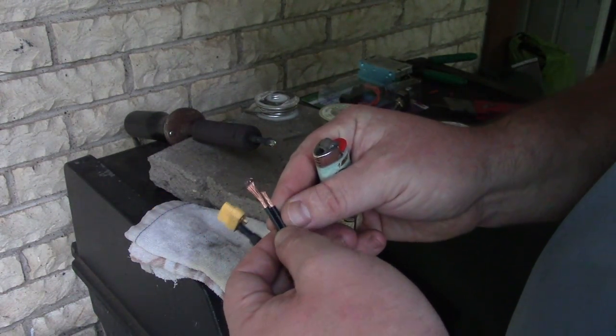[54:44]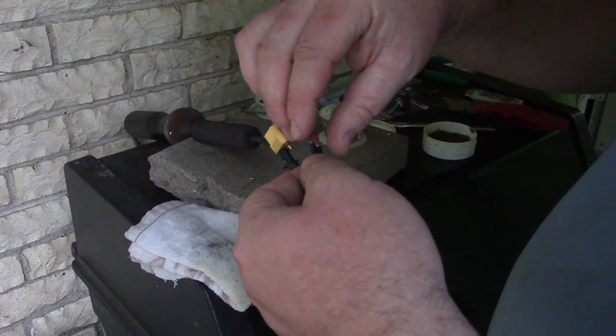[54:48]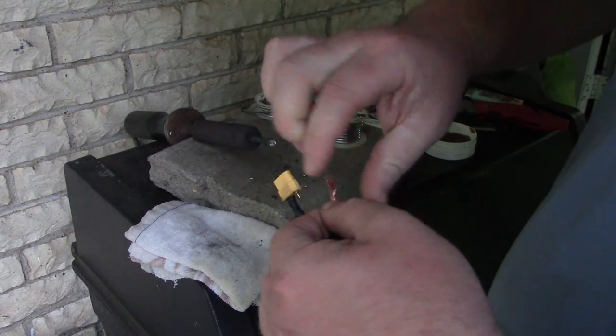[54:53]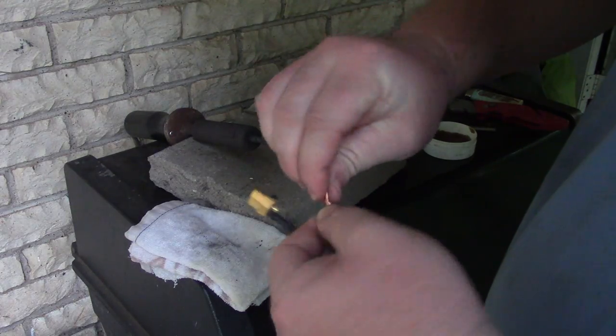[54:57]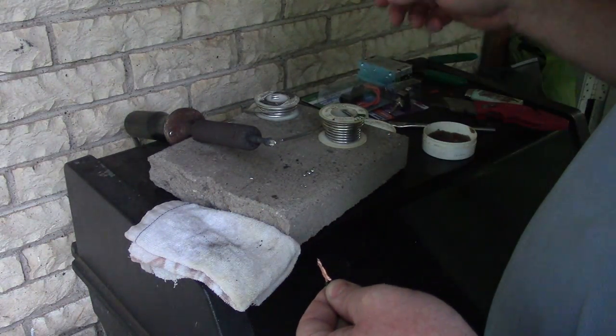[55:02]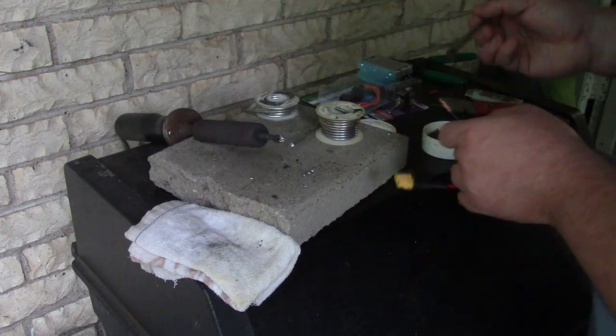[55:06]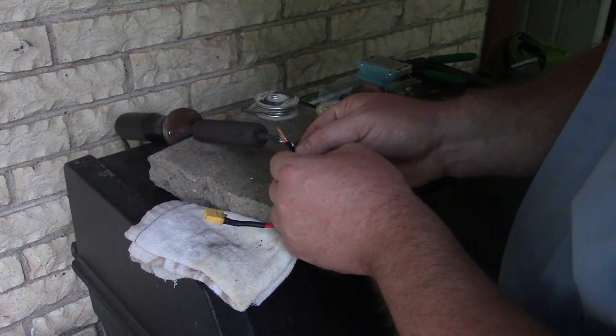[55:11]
Okay, so there's that. So on the negative side, I'm going to try a little harder to have a little bit more difference in length of my cable ends. See if I can make this work. So I'm going to twist from the bottom and then twist the top separately up high. That thing's still hot. I unplugged it for a bit. Gotta have your flux. I'm going to make sure the bottom's soldered together.
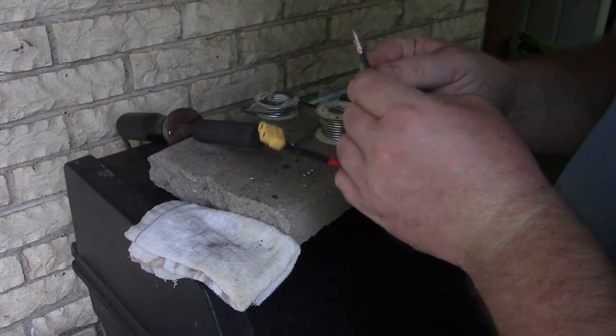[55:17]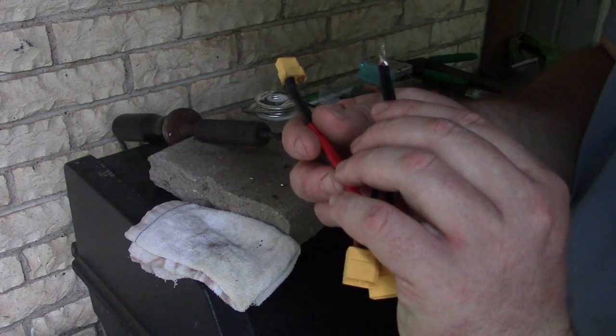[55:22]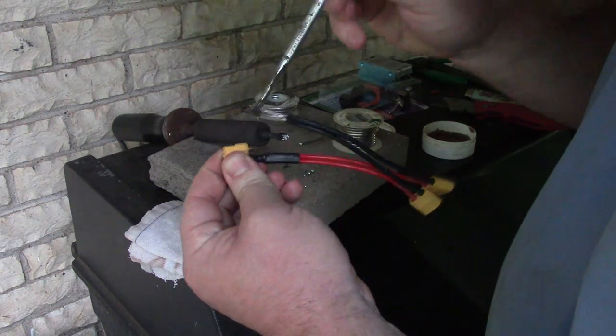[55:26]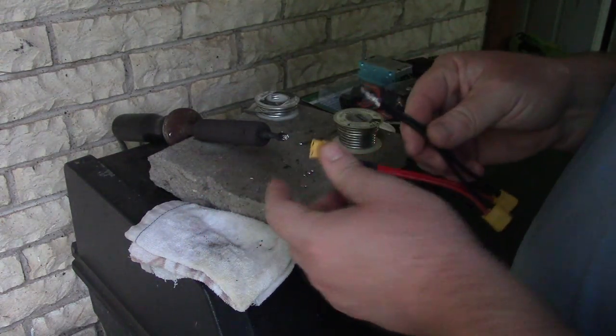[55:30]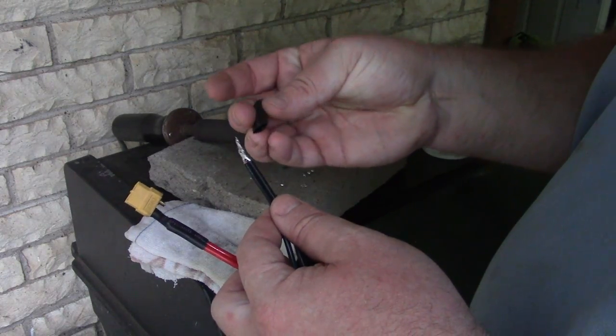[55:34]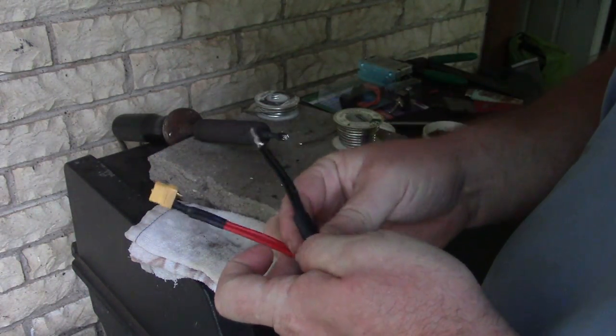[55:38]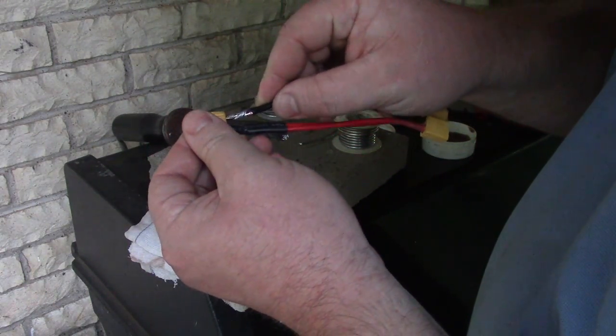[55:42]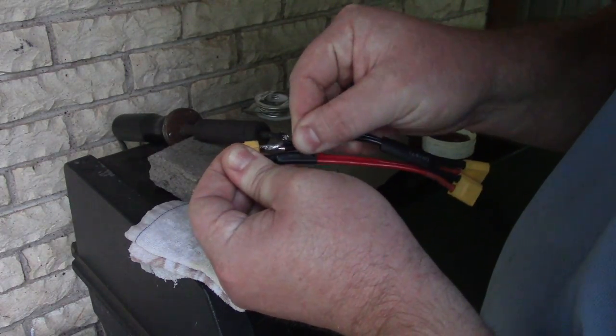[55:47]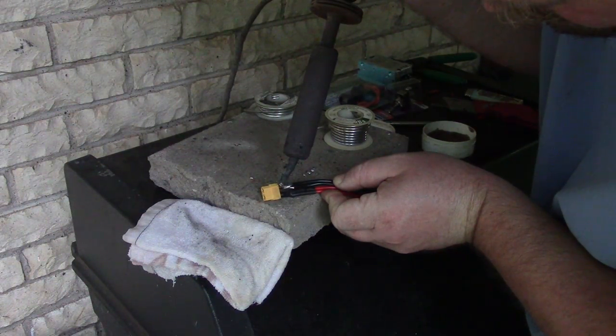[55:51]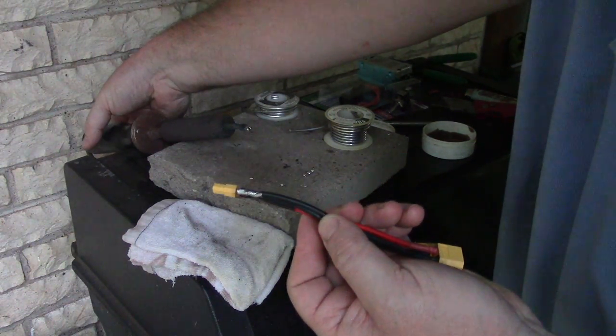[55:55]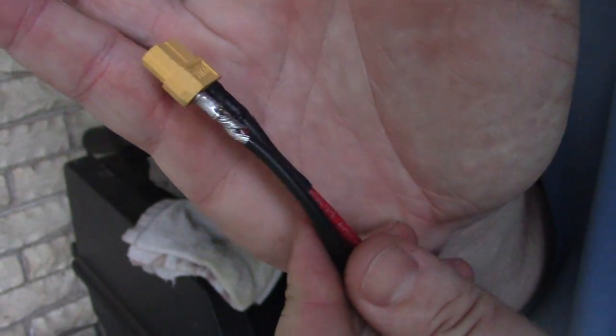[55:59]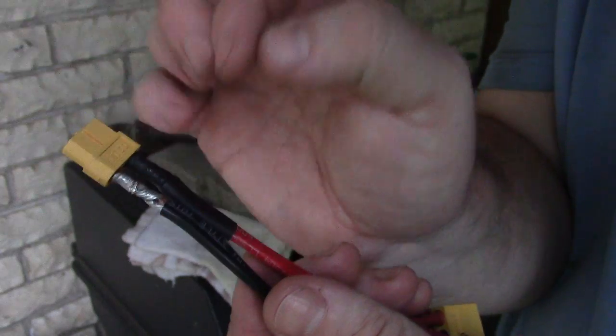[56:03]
Okay, so I might have done something. Okay, yes, that is connected. Very nice. I don't remember if I fluxed this, so let's just go ahead and flux it. Oh, and the heat shrink. We're going to go for the big bad boy again. I'm going to slide it on. There we go. So now we have a wire that will actually kind of go down in there a ways. That's good. Okay. Very nice solid connection on my negative. So try to do it better than I did my positive, okay? It's looking good.
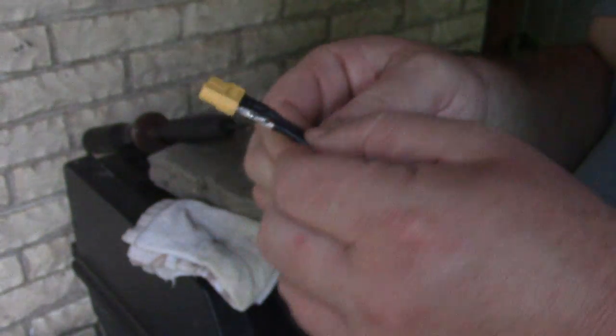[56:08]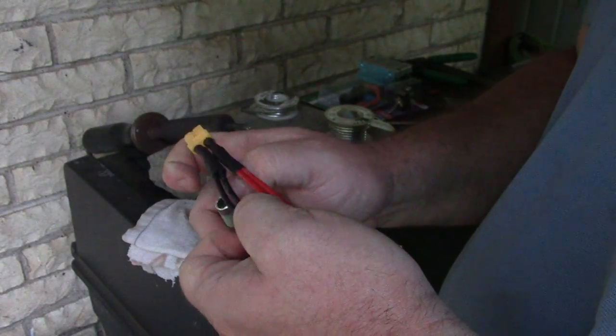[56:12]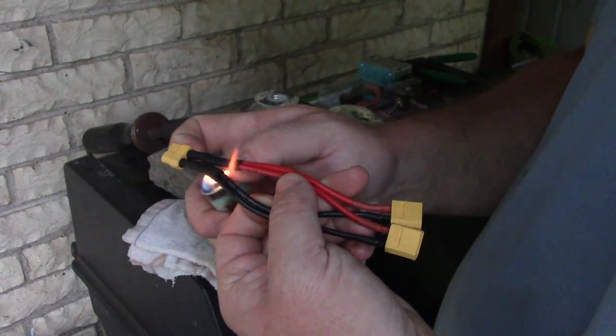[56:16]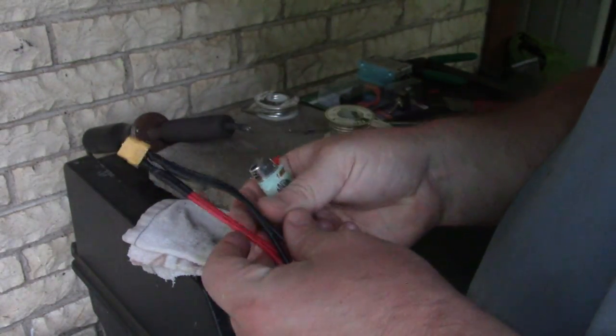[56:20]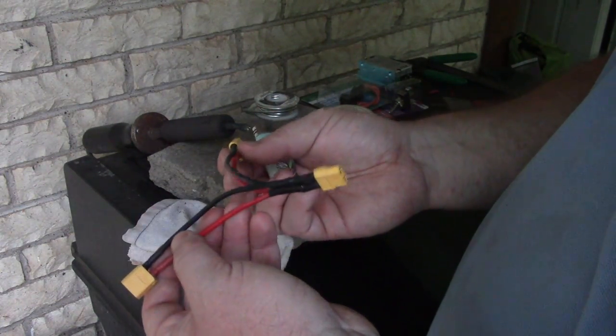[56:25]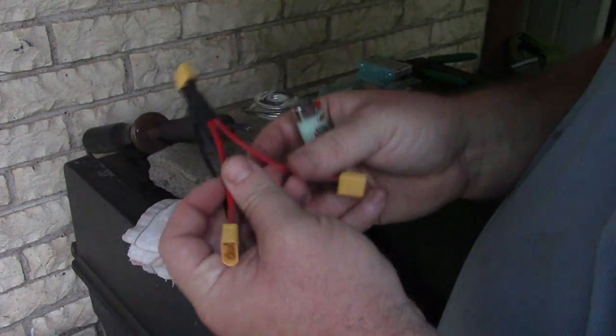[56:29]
Wasn't easy, but I made a parallel connector with some giant 12 gauge wire into an XT60. Neat. So there's my parallel. Let's just make sure everything's good. Negative, positive, positive, positive. Yep, didn't do any stupid mistakes.
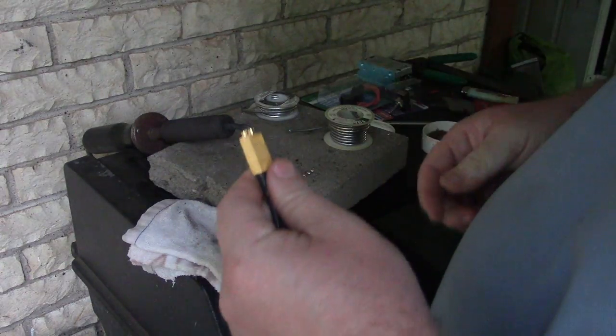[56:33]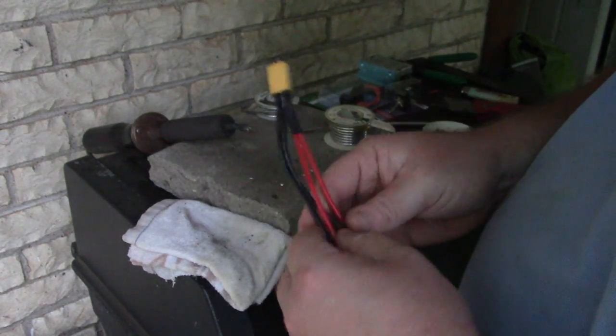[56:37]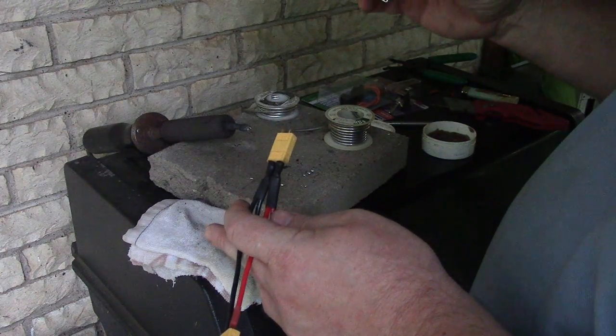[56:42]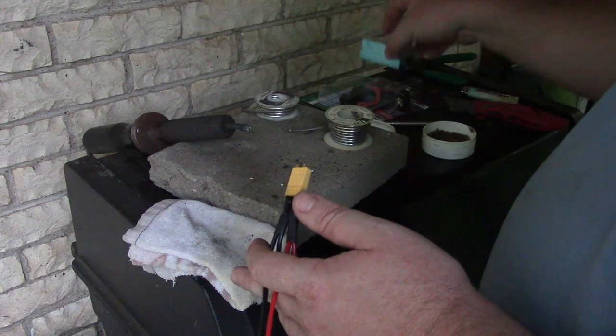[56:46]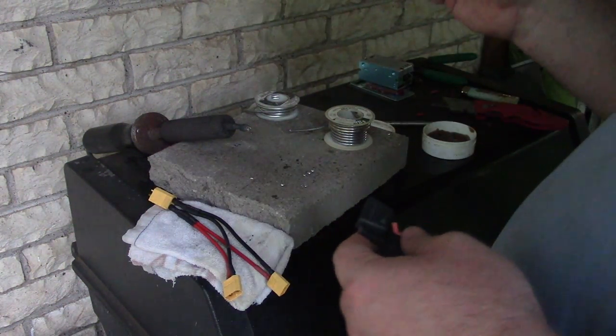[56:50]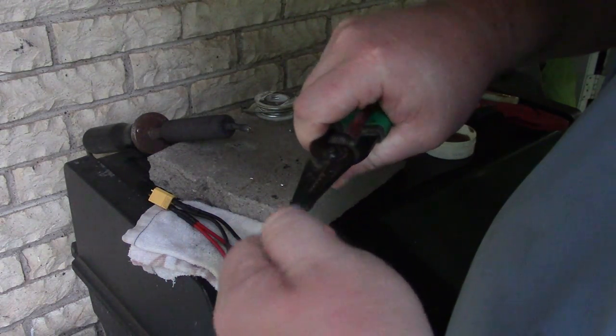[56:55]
The next thing is I'm gonna parallel my batteries together, and then I'm gonna connect them to my buck converter via a fuse block. Oh wait, I also have a switch I want to use. So I'm gonna solder this connection. Not gonna bother crimping things.
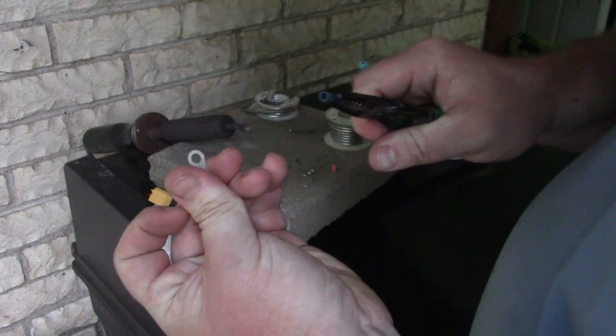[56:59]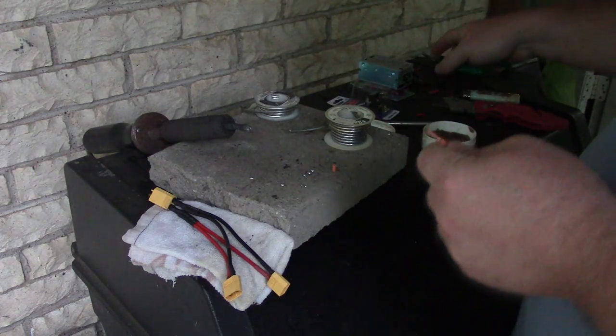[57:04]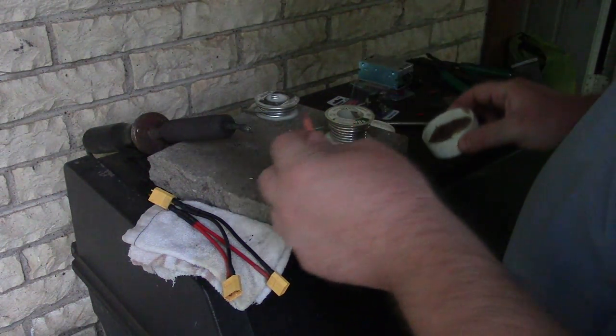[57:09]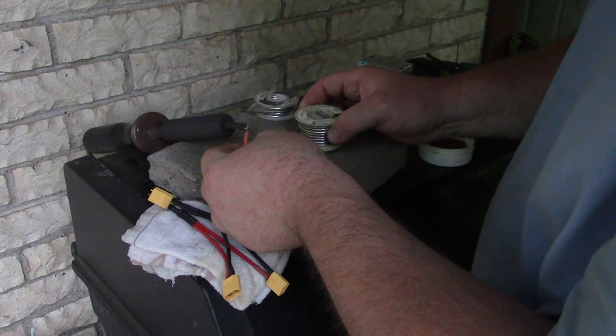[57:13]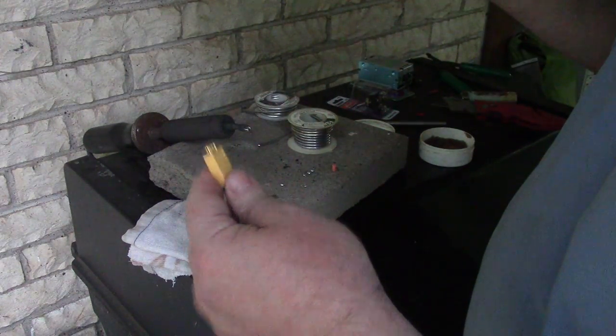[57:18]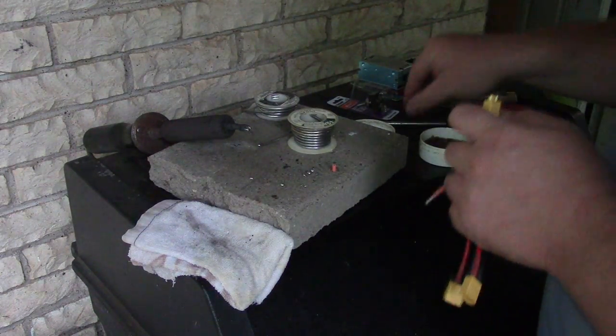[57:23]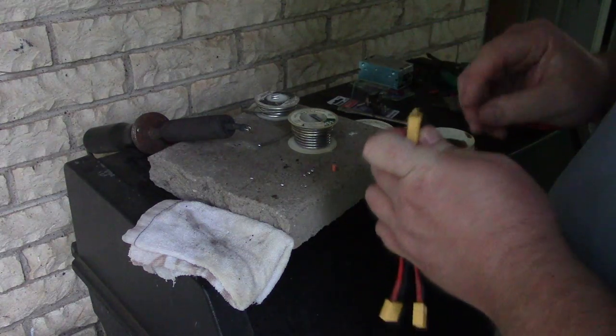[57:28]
So I'm just gonna take the little insulation off of my little eyelet here. Let me strip a little more off of that. We're just gonna do the same procedure. I'm gonna get some flux, put a little bit of solder on it, and stick the solder into the positive end. Oops, I need some flux on this thing. Let's get a little more on it, who cares?
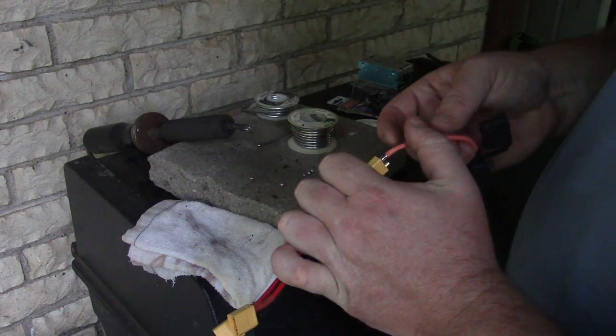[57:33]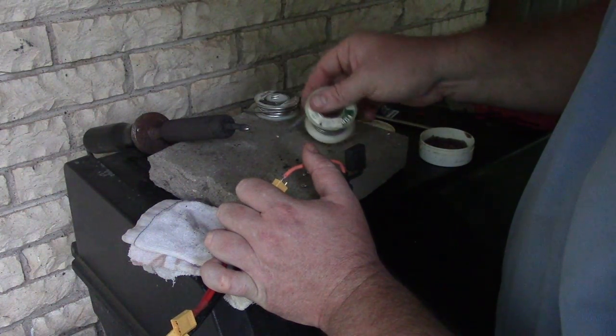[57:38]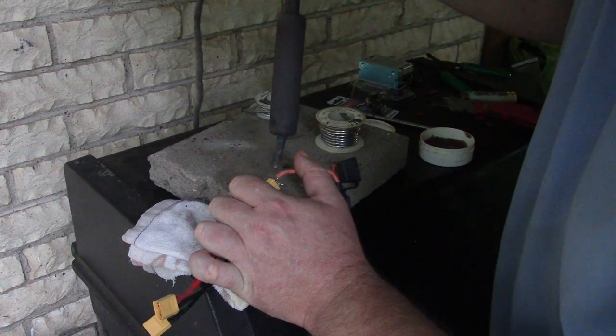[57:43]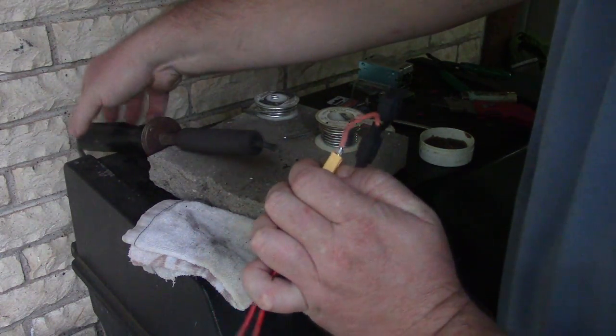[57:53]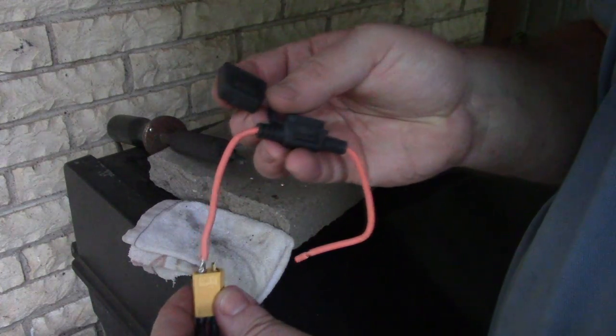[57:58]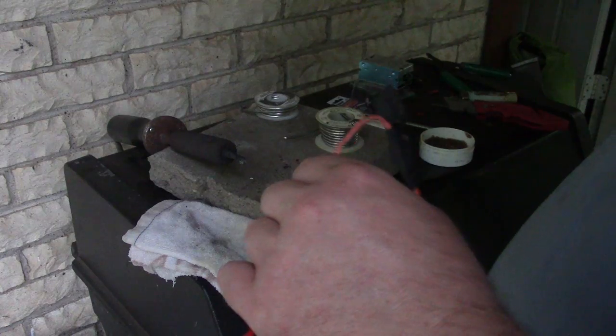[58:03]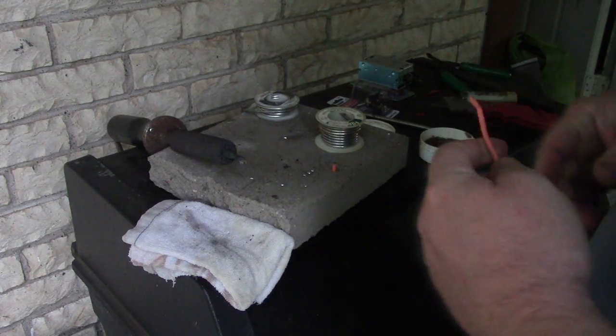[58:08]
Okay. So then I'm gonna get a little ball on there and solder my connection. It's bubbling, it's boiling. All right, it shot out a little ball of flux. And wouldn't you know, I forgot to put the heat shrink on it. I was so excited, I went on a real roll just then and I forgot the heat shrink. Okay, of course. Let's see if we can do better on this other side.
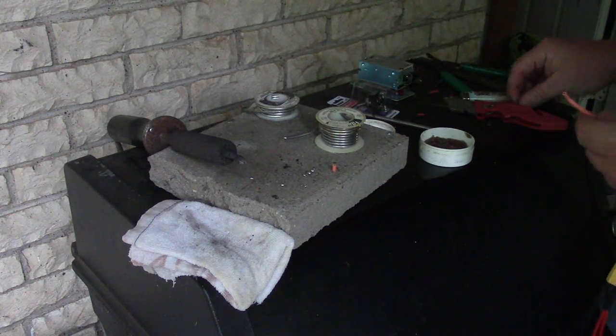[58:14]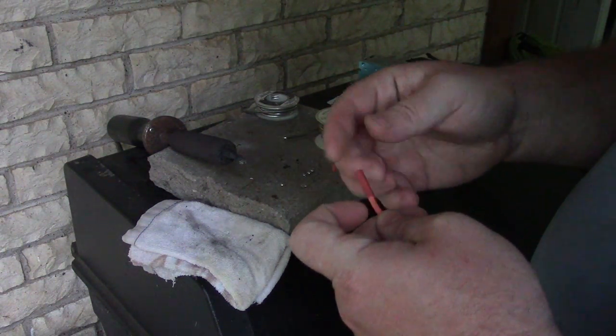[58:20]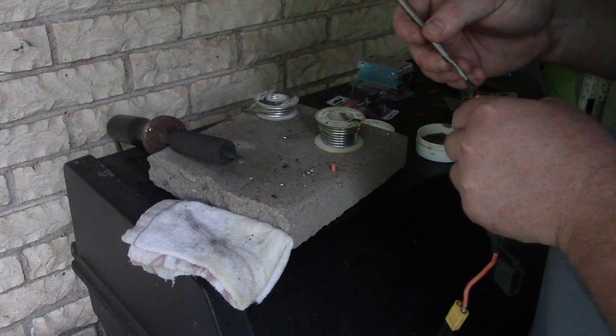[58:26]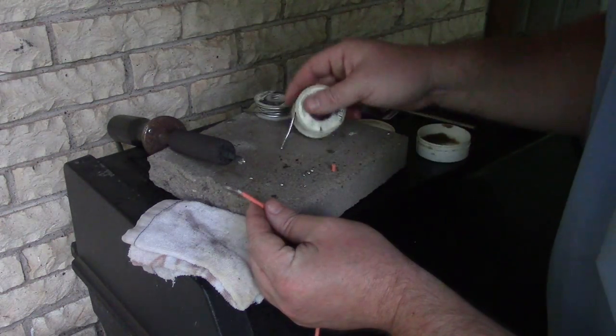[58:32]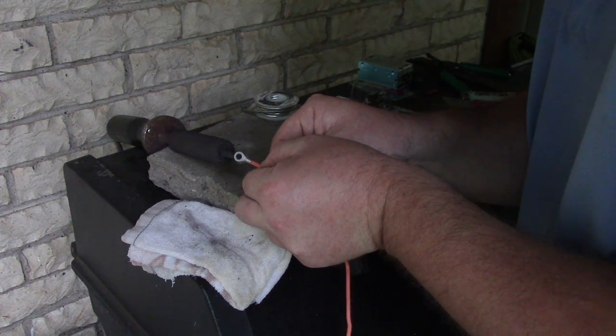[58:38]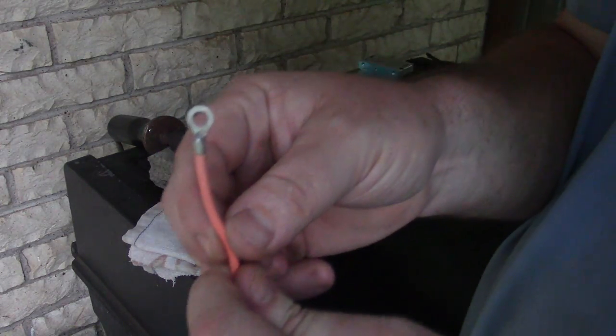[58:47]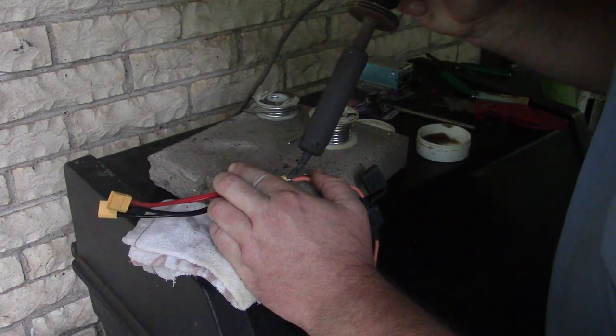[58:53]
Then we'll fix this one. Okay. So I got some heat shrink. That's going on first. Oh my God, I am a mess. That fluxed. Slide that on. Everything is golden. Ball of solder on it. Let's see if I can just suck it down in there like this. That might work. Yeah, come on, you know you want that solder. Yes. Oh, beautiful. Like that. Oh, we're on such a roll.
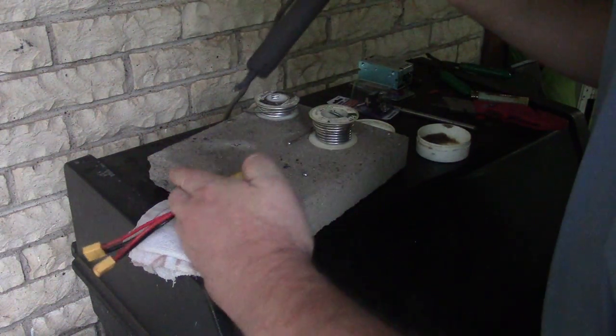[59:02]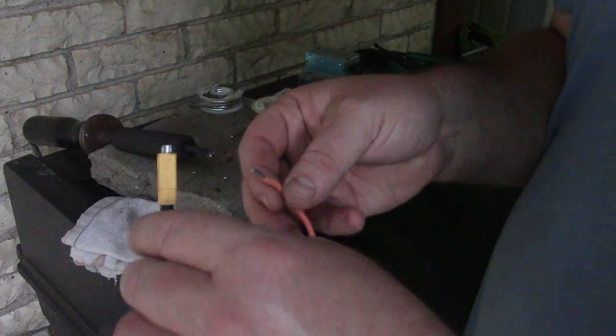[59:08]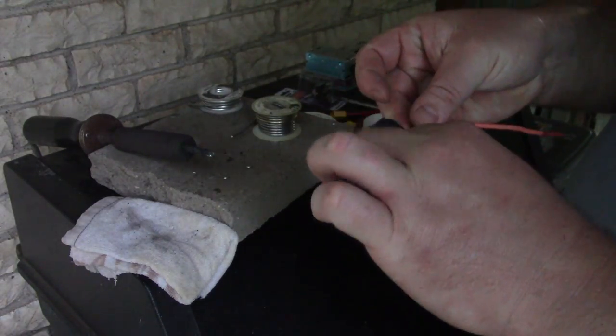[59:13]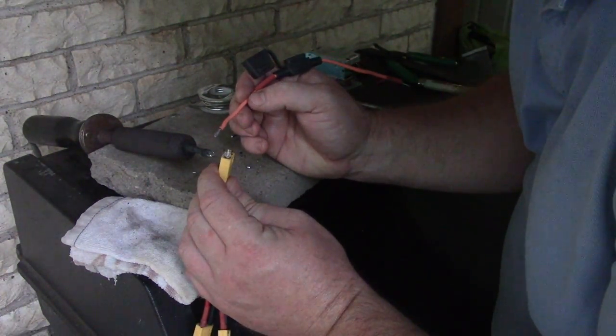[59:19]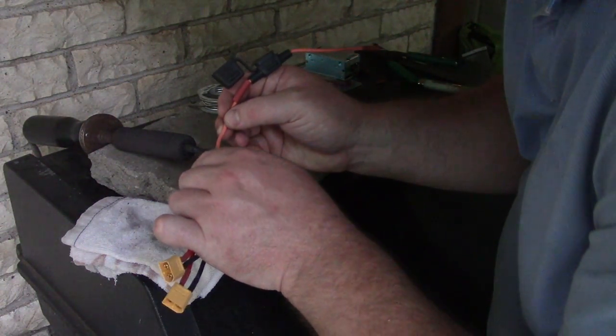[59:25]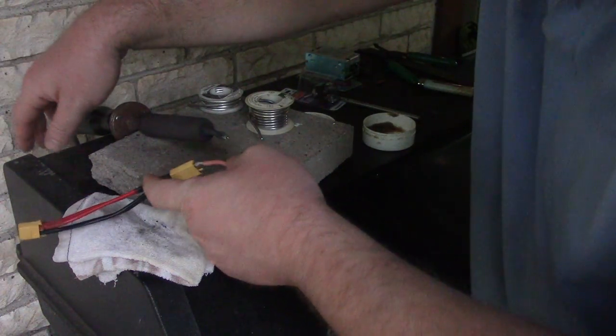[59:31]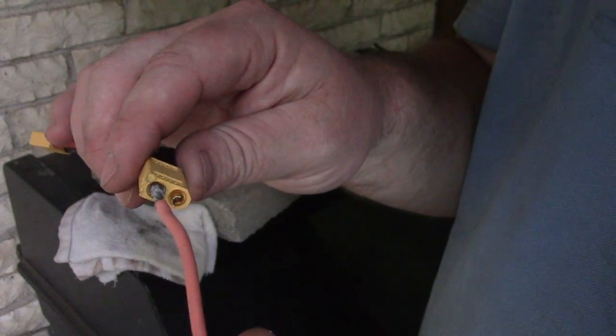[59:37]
Totally screwed the pooch on this one. Come on. All right, it's liquid. It's liquid. Pull it apart. Oh, God. Right on the feet. Excellent. Cool. Okay. We can recover from this. Heat shrink on the tube now. Very good. So now we have this connection full of solder. This thing's too big to go in. What if I can liquefy it? Come on, man. Whatever. Damn. Okay, well, I got a very positive connection.
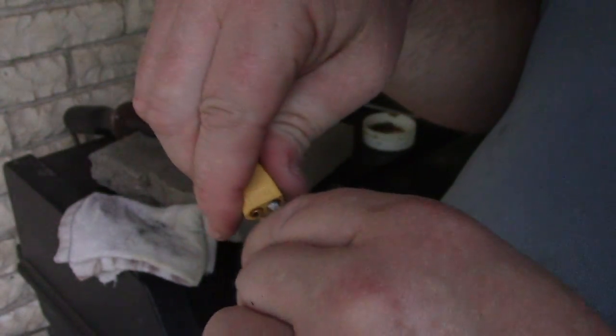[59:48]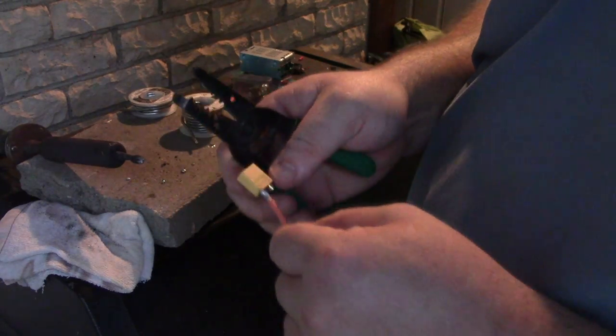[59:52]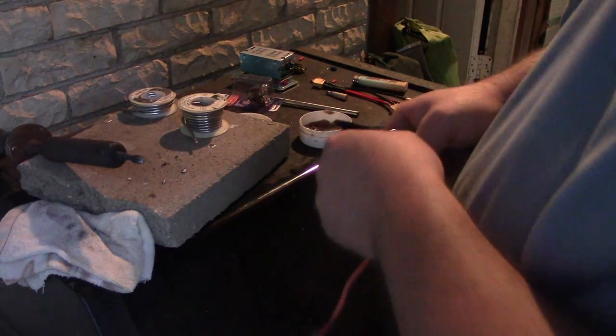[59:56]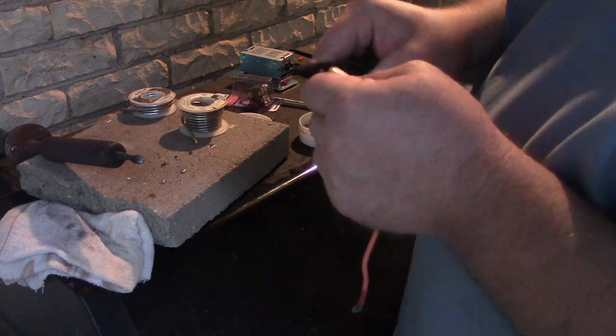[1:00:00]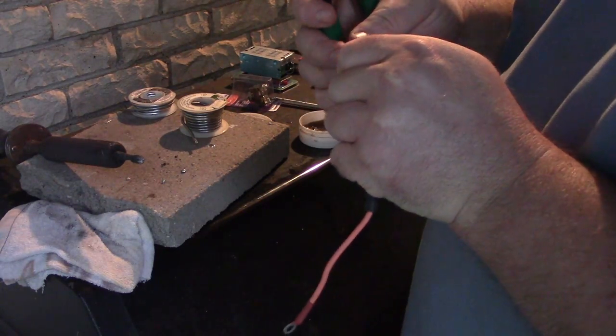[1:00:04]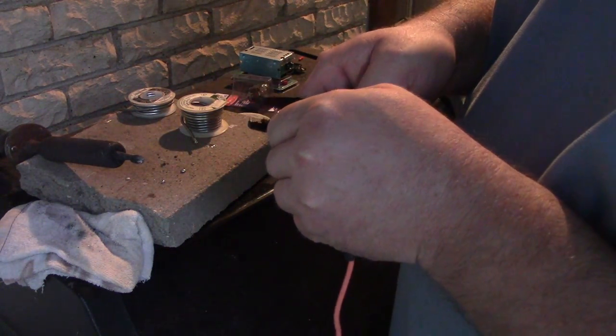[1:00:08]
But look at this at the bottom. How am I going to get heat shrink inside that? Dang it. Okay, here's the deal. You got to know when you've been beat. Trying to reuse this connector after I soldered it once, those big globs of lead, not going to work. So let me just cut a new part. Oh my gosh. Let me finish cutting the lead off, and I'll cut a new part.
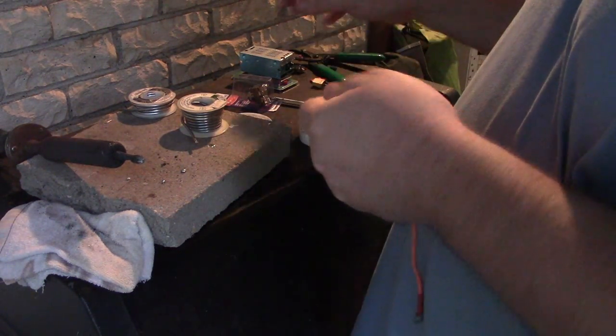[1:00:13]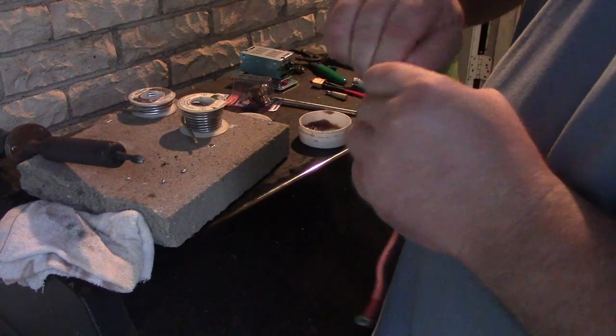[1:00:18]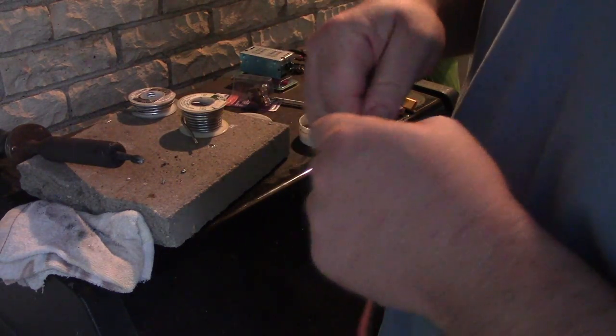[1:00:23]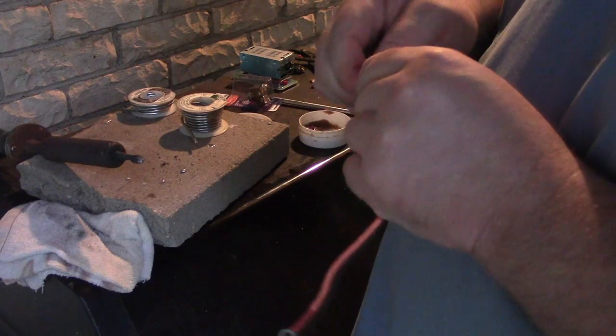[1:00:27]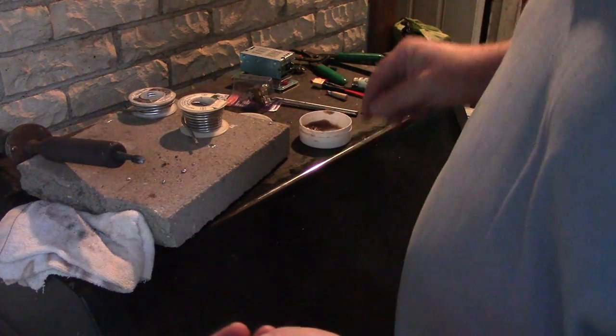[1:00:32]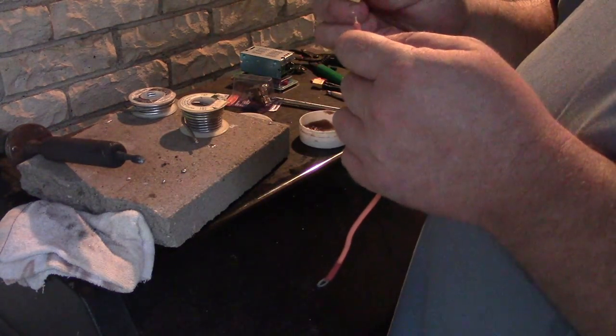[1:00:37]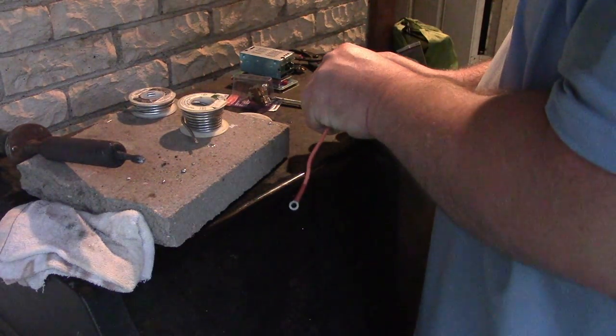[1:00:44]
I got the heat shrink on it. I'm gonna twist it up nice and tight. Nope. Messed up my twist. Made a big lump. Gonna twist it fairly solid. So, okay. Make sure I've got the right connector here. We're gonna go to the positive side. Okay. See if I can do this without screwing it up.
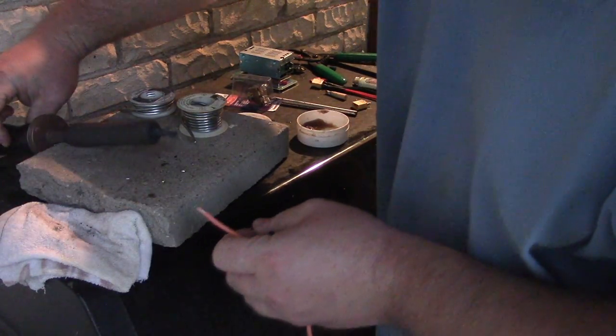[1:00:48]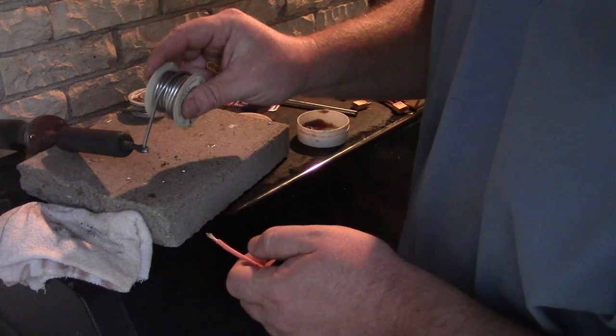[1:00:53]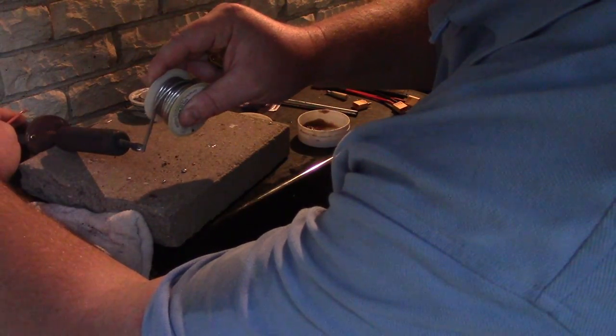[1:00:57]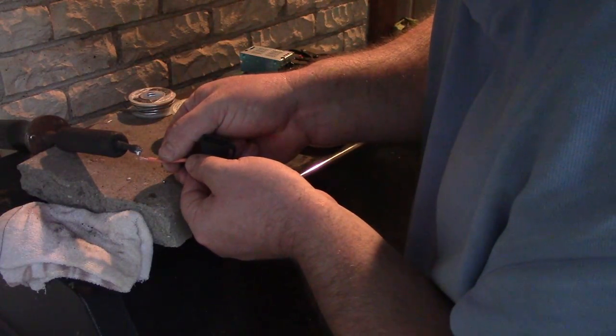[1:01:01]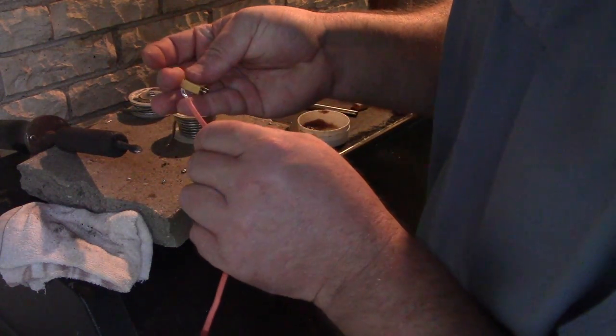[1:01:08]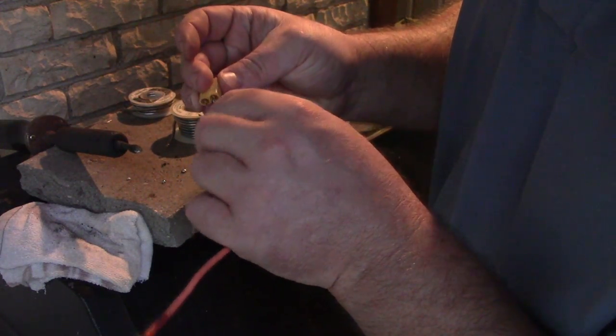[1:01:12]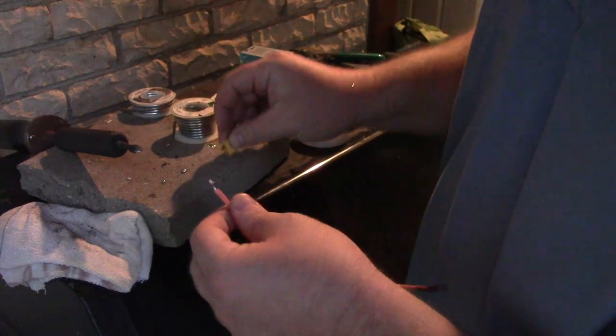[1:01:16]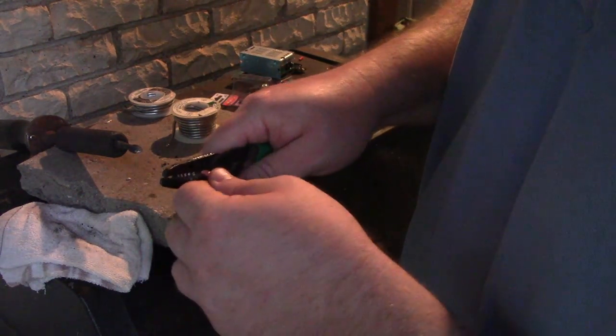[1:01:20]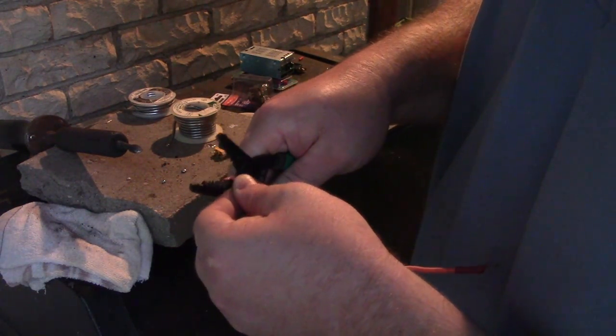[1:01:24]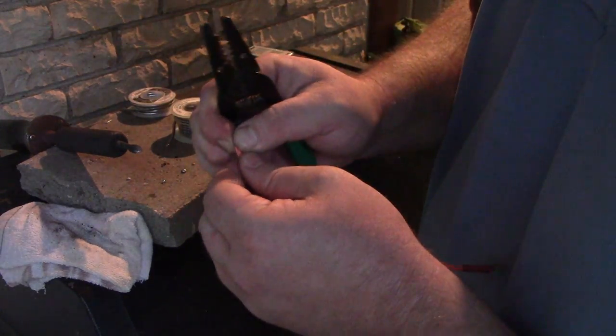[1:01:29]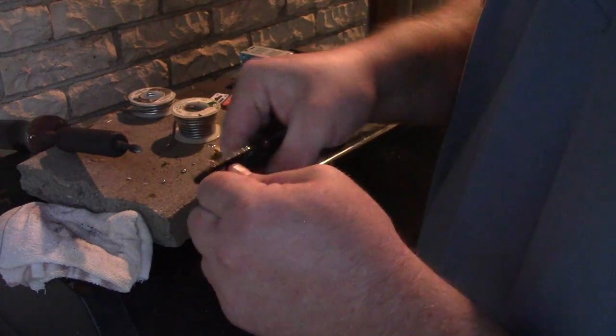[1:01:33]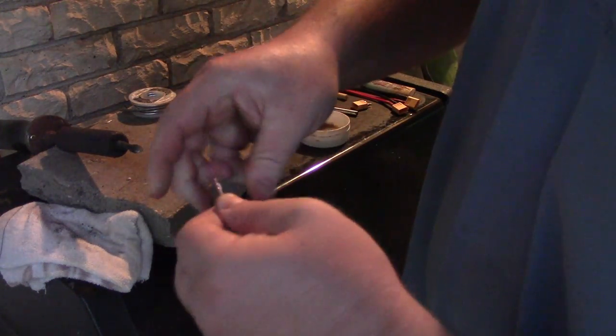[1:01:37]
A little bit of flux. Clean the tip of the soldering iron. Let it roll around dangerously. Beg it to take some lead. Raise the tip of that a little bit until it's too big to fit in here. Yep. Just like that. And then you want to cut it off again with your terrible dykes. Oh my god. Okay, whatever. We still got a little bit of wire left on this connector. Okay, we'll just go with it.
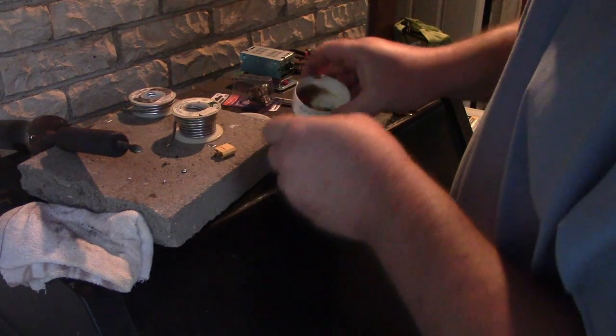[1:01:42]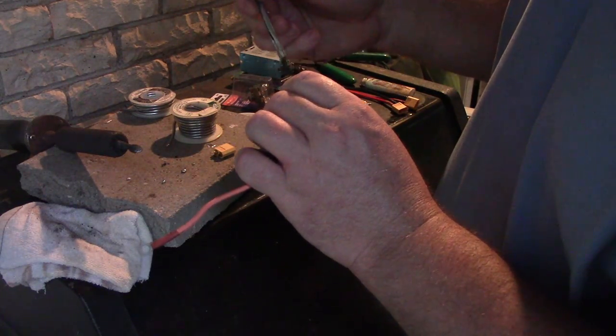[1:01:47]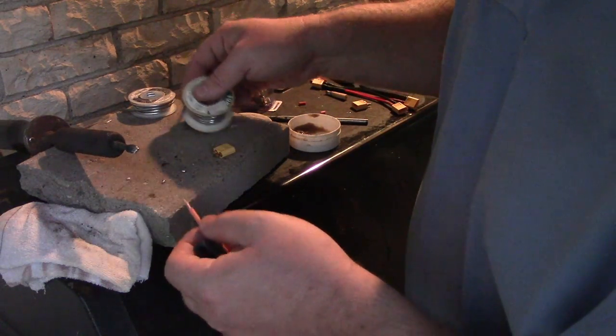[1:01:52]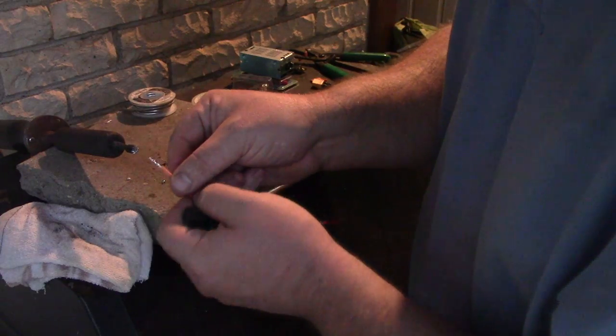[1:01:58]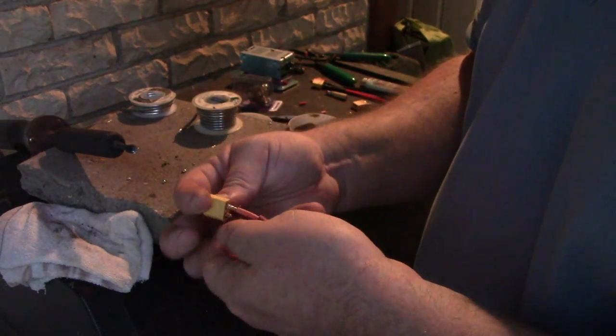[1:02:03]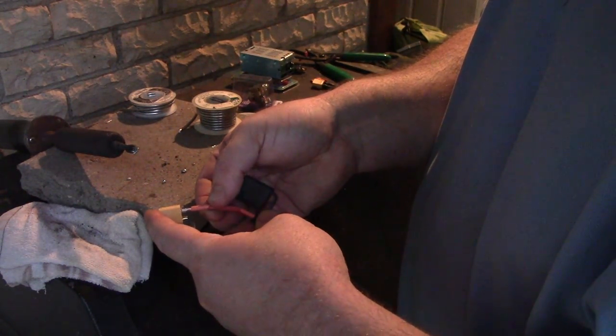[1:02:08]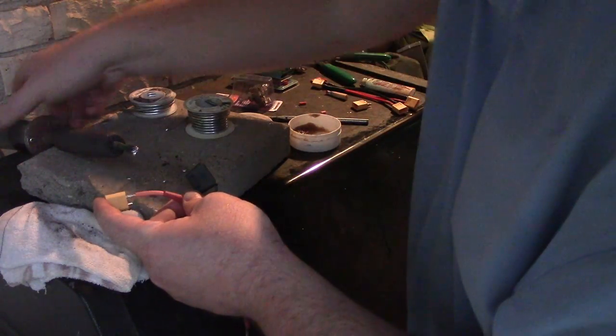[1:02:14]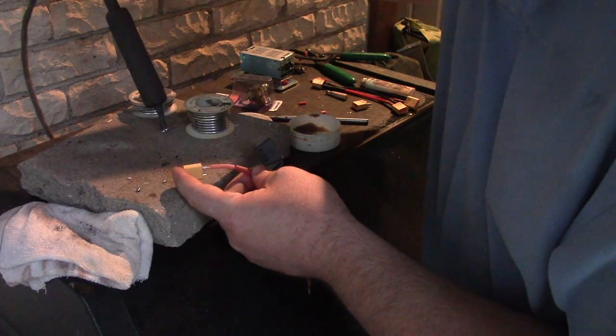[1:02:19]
There'll be a little bit of copper down in there, so put a little flux on it. Maybe a little more, why not? Let's see if we can't screw up a few more times. Come on, get a little bit of that. Now we're gonna try from the, yes, the bottom up. Look at that, that'll fit. Fits right in there. We'll always maintain your fingers in a very dangerous location. We're gonna lose that drop because the iron's too hot, so cool the iron off again. Try to get a little bit of lead on it.
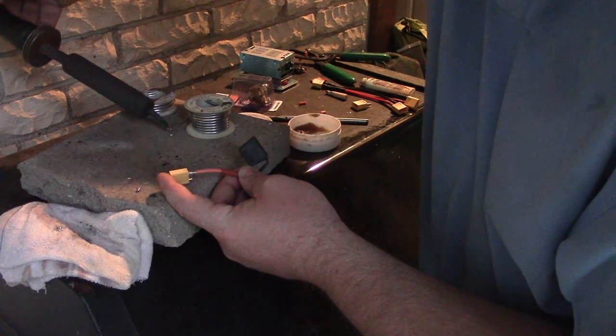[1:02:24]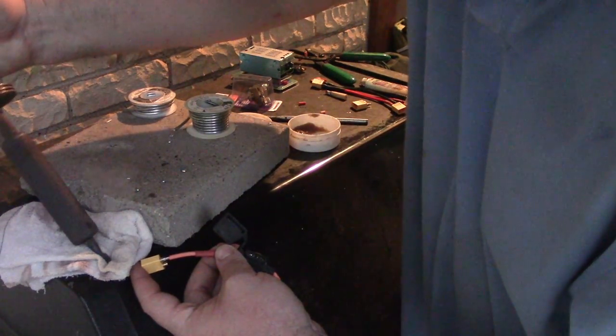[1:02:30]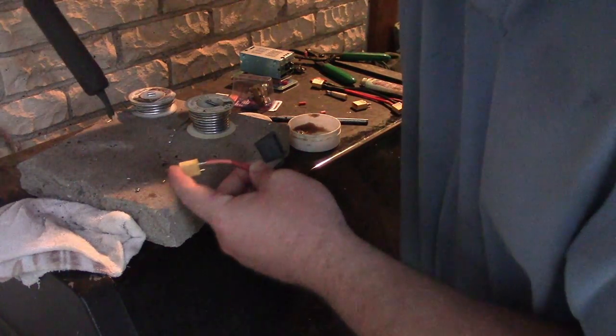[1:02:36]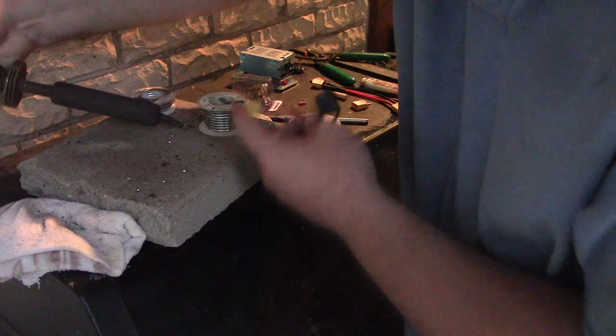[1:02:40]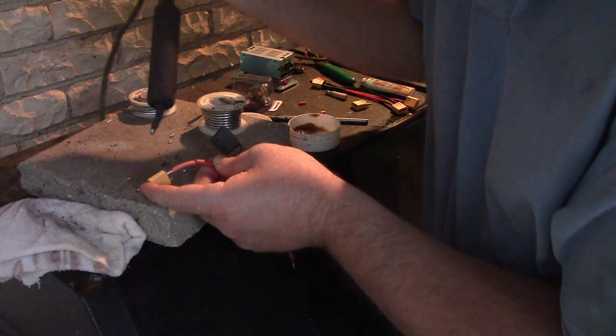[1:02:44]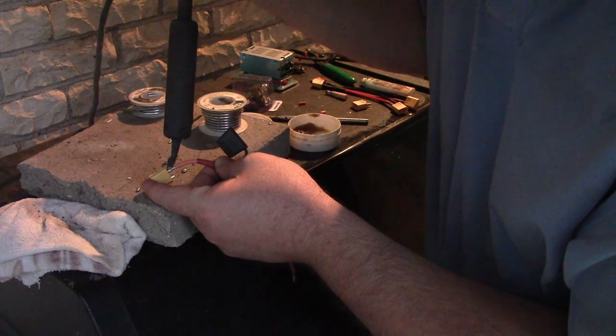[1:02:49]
Lose all that lead, okay. And lose all that lead, so cool the iron a bit more, getting it very clean. All right, this is the ultimate shit show. Okay. I got a drop. I'm just gonna mount that drop right there. Whoops.
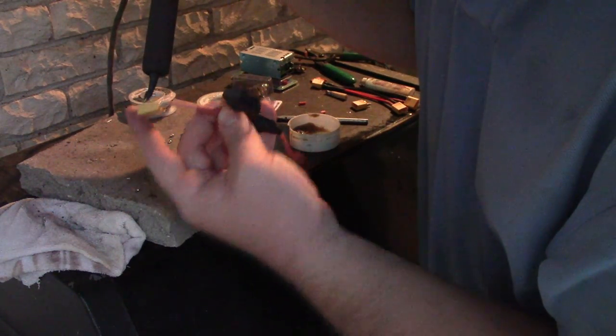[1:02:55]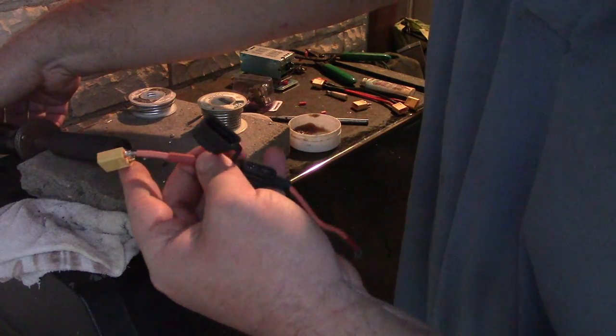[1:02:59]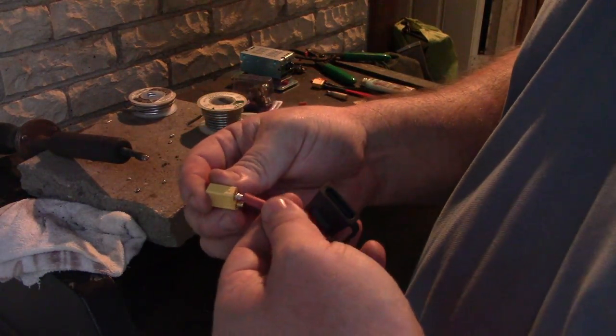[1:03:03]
Okay. And I do believe we are connected finally. Jeez Louise. Why do I suck at that so much?
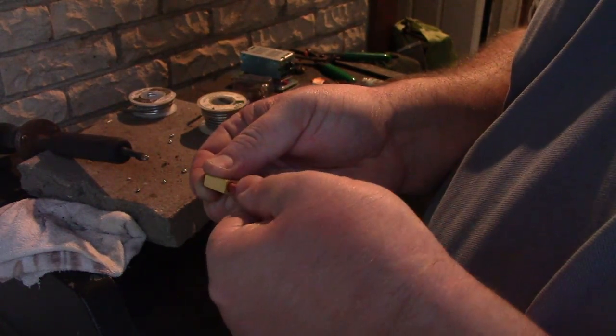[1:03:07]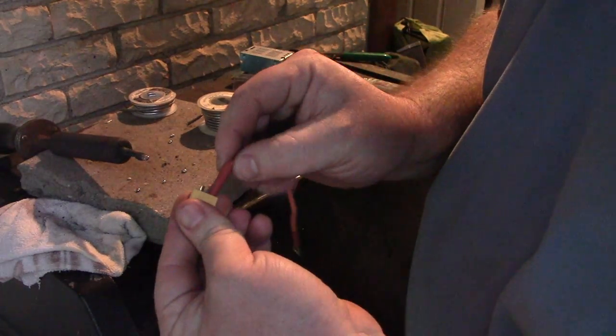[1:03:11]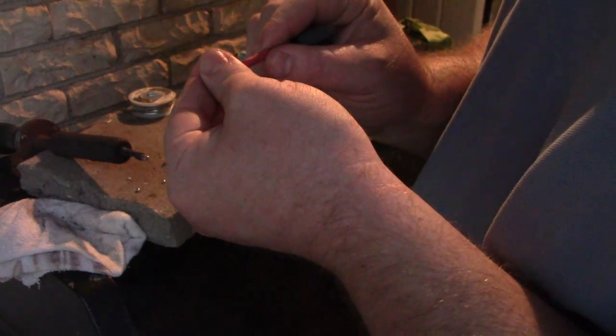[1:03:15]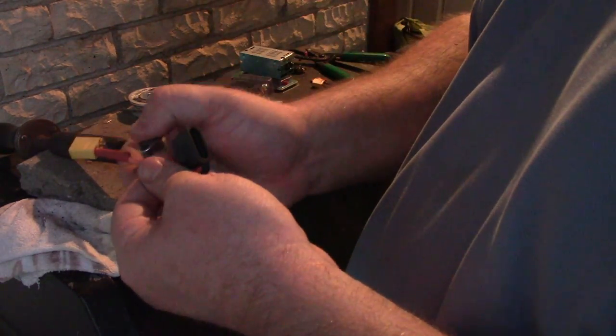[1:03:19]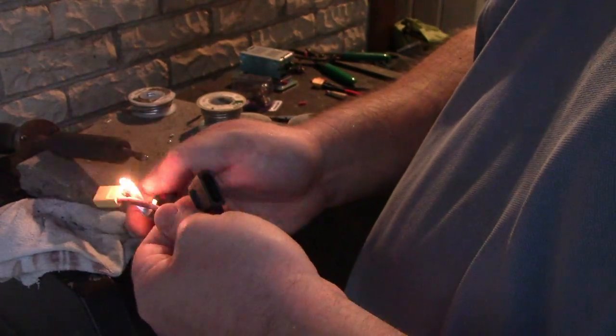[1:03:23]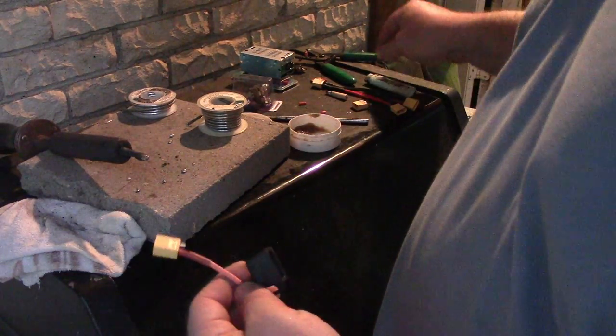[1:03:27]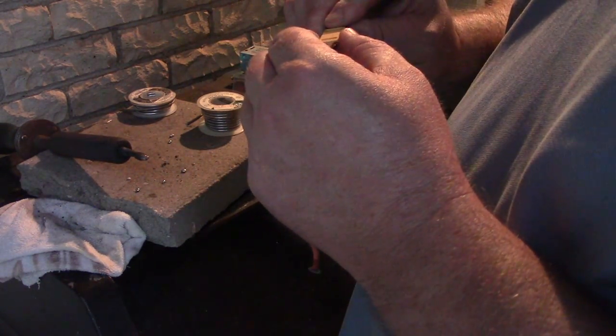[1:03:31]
Oops. Then you push your heat shrink on before it cools, so it shrinks before you can get it in where you want it. And then you just barely get it acceptable. Okay. Whew. Here we go. And as easy as that, you've soldered a connection. Let's go ahead and connect this before we melt some stuff.
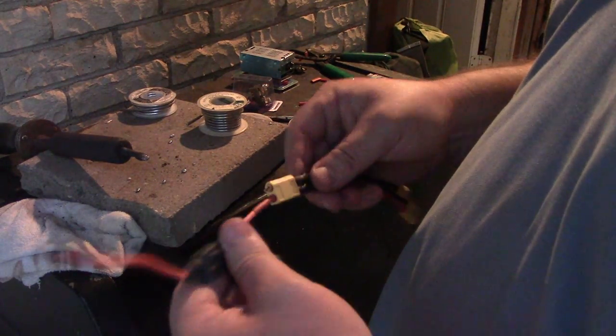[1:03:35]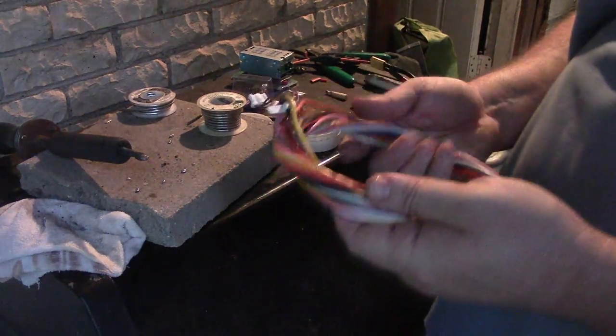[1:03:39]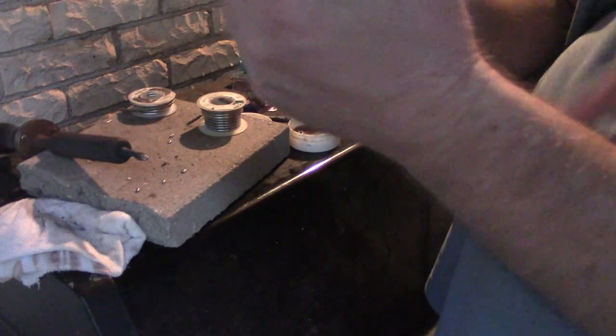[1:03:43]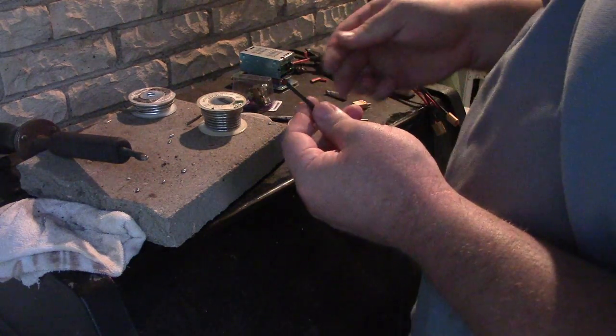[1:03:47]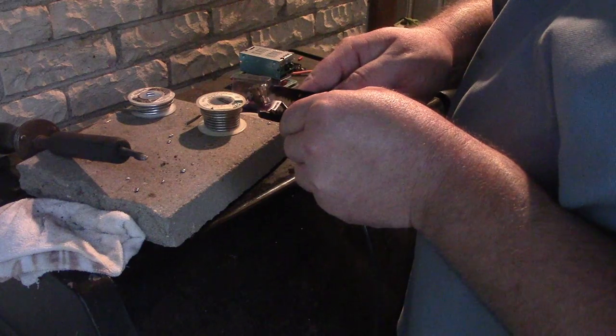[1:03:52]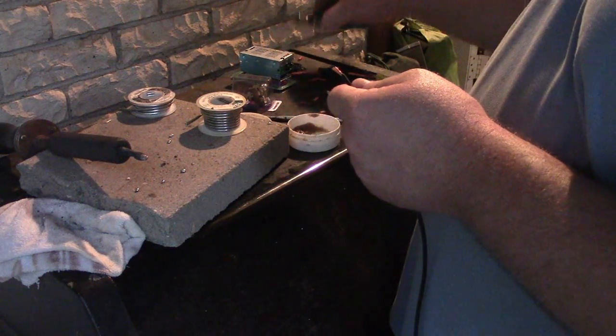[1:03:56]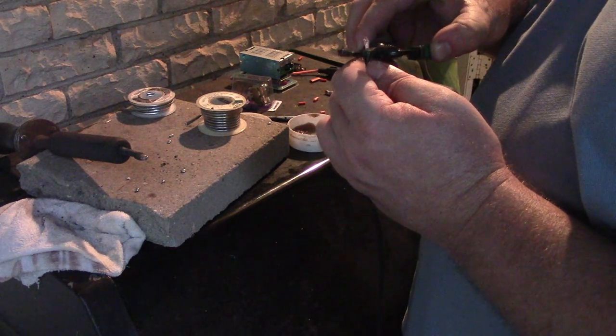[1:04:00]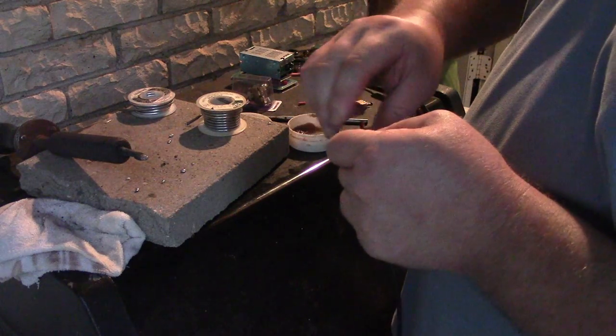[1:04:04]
So now I need to find a negative cable. Okay. Here's some more cable that I've salvaged from something. I just want the black one. This is another nice copper cable. I think some of it I was using was aluminum. I think this might actually be a 10 gauge. Okay, it's a 10 gauge that I just stripped down as a 12 gauge.
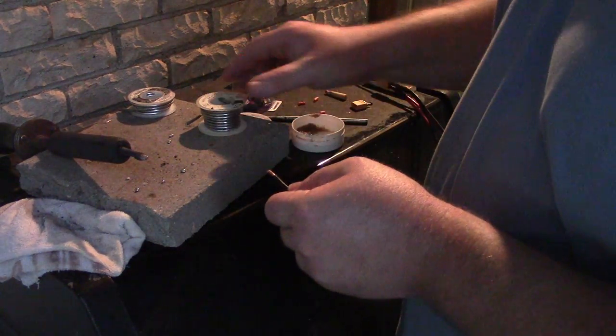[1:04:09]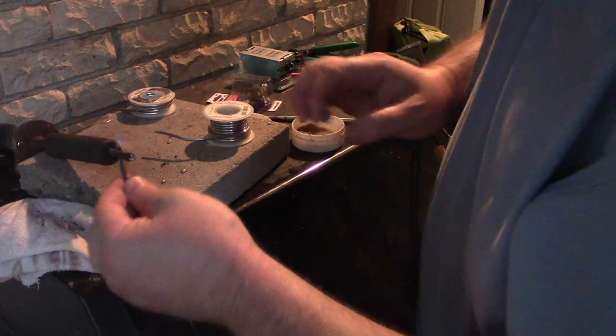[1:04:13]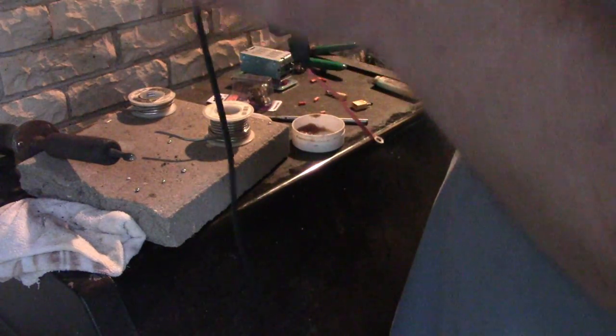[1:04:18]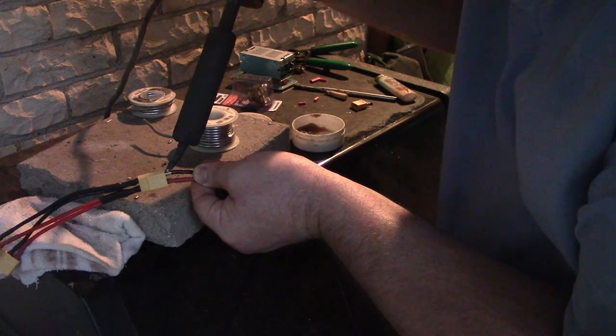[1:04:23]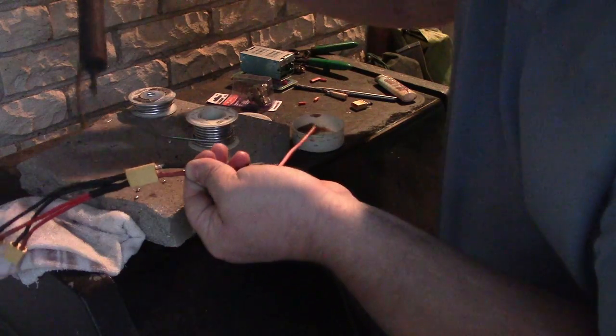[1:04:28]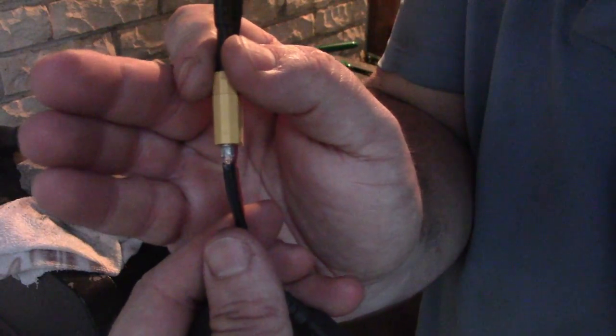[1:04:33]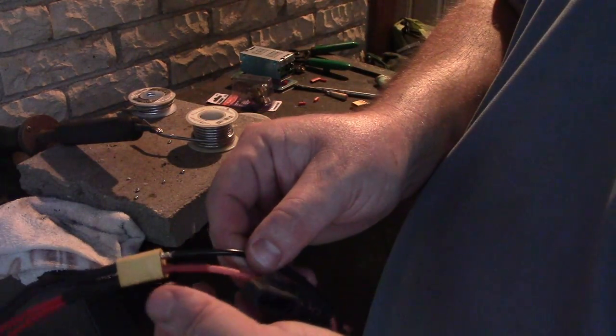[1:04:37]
Okay, twist, dip, and pray. Okay. Twist, dip, pray, repeat. So I'm gonna leave this one long. I'm gonna cut it to length later. Oh, yes, right onto the insulation. Okay, there we go. We've got another good looking one. Every fifth or tenth solder looks nice. That's a good track record.
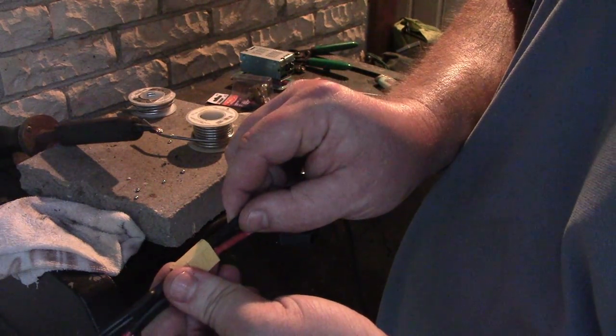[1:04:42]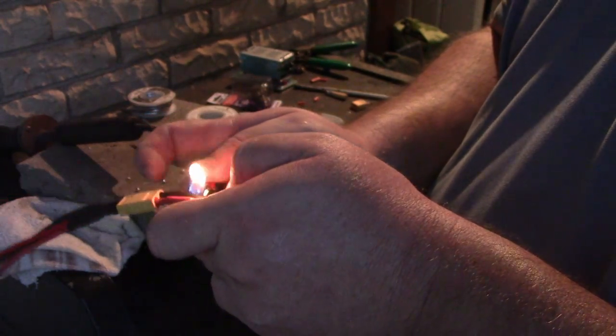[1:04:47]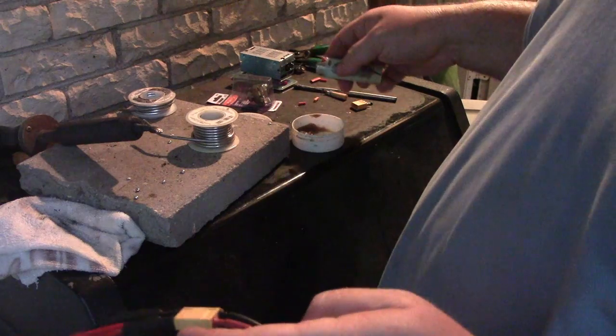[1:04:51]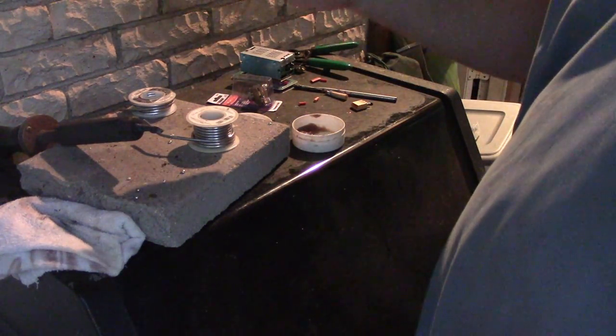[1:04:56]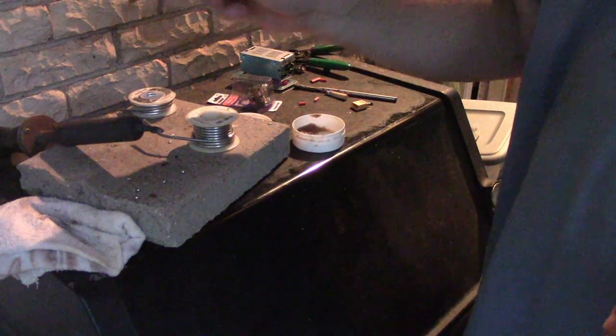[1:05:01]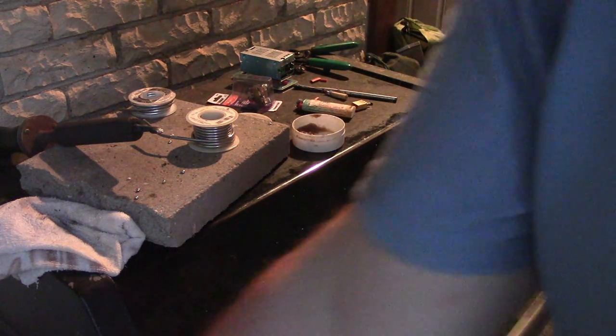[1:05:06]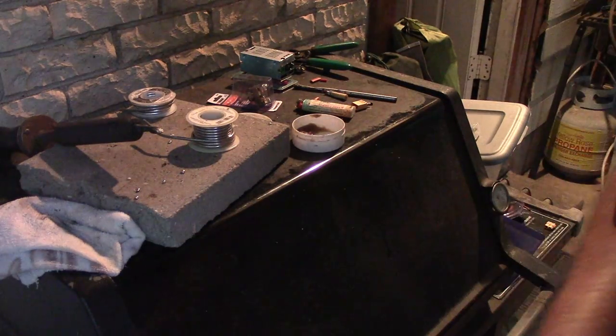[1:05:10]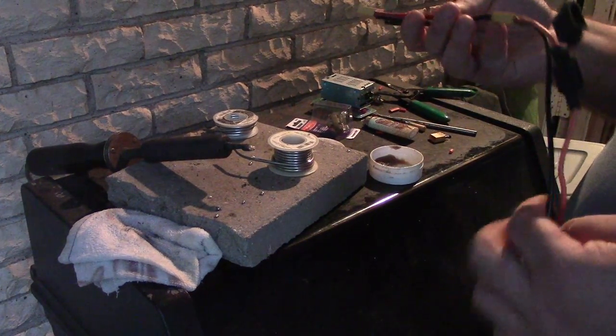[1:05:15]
I'm gonna try to cram it on hot again. Then we'll melt it on. Very nice. Okay. Whoa, do you see some sparks coming off my soldering iron? What is going on there? Oh my god, is the whole thing electrified? It's going to electrocute me if I touch it. Okay, let's get that puppy unplugged. Woo! Okay, well, I'm going to call it quits tonight because that was too much of an adventure.
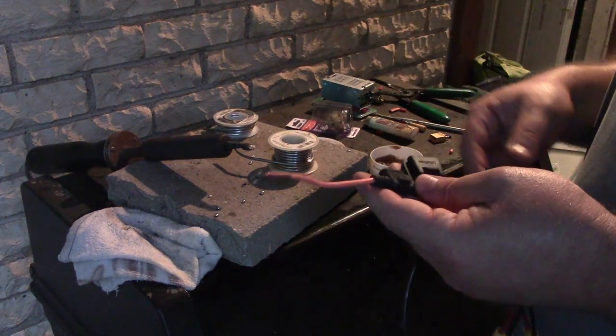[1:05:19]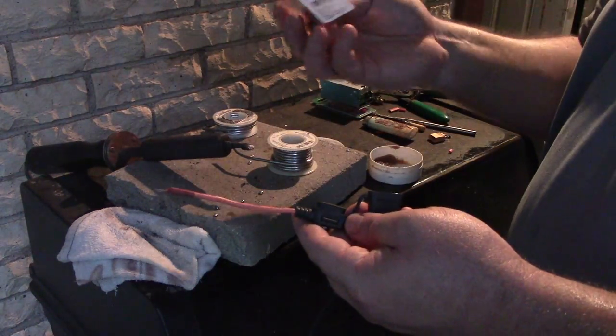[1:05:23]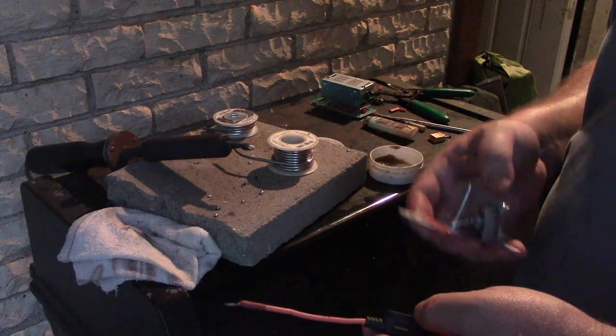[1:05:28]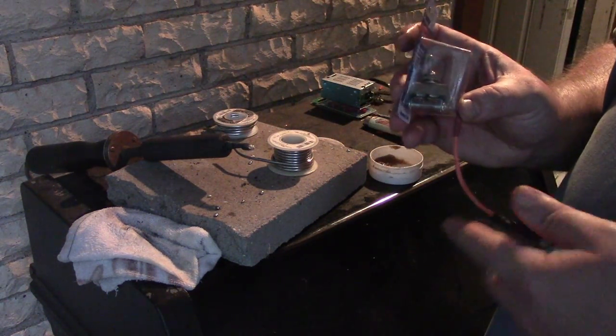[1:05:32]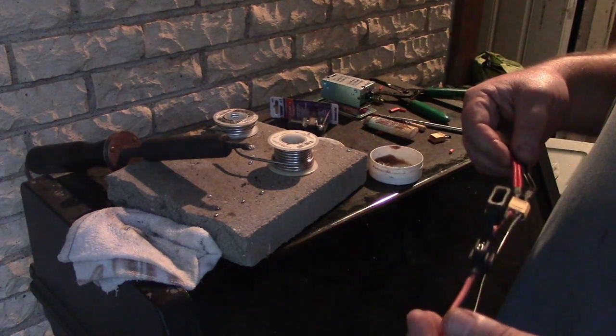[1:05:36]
Next time on Benjamin Huttash ruining everything he touches. Actually, you know what? Yeah, no, that's not true. This is going to be one video. We're going to put the switch, I guess I'm switching the positive, and we're going to put this thing together. Okay, hopefully the hard part is done.
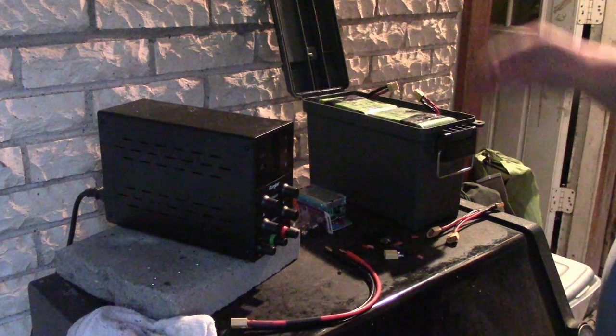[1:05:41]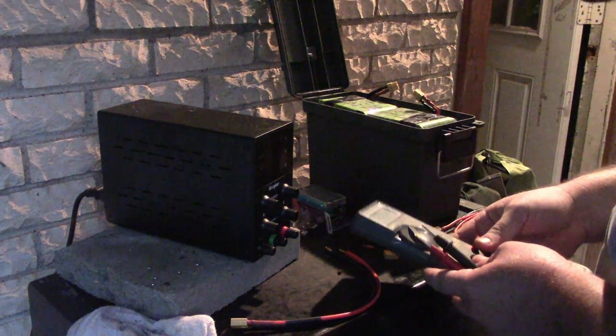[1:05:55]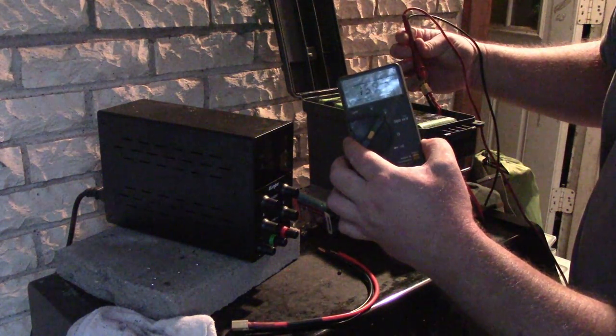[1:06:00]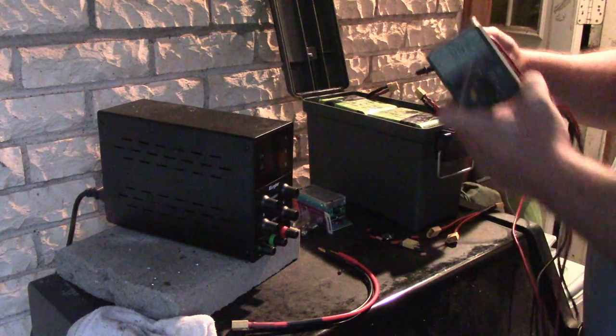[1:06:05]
Okay, so actually while we're here, I want to balance these batteries a little bit as my next step. And I'm going to charge them up a bit more. And since it's my nighttime, but not the end of the video, let's see what we got here. So this pack is 15.87, and this pack is 15.81. So there's a little bit of a difference in charge. But I'm just gonna see if we can balance these two through this puppy.
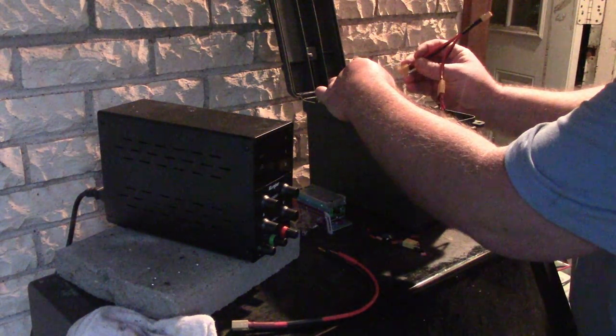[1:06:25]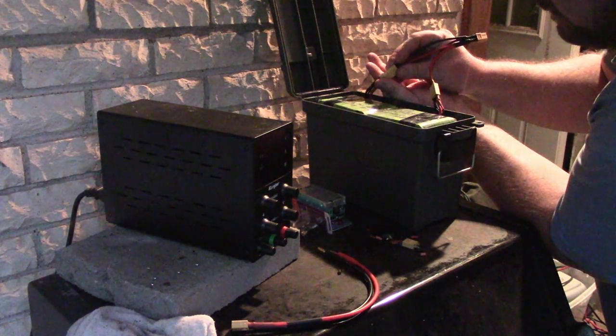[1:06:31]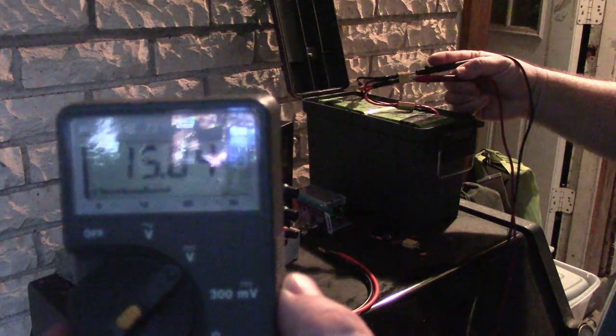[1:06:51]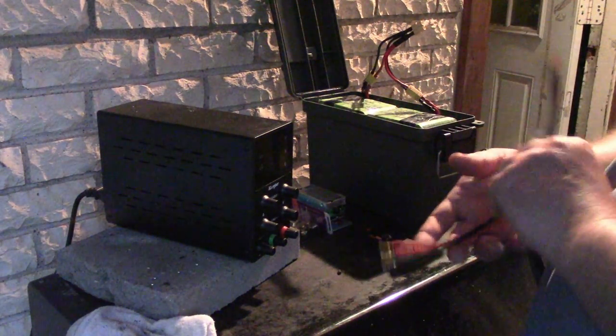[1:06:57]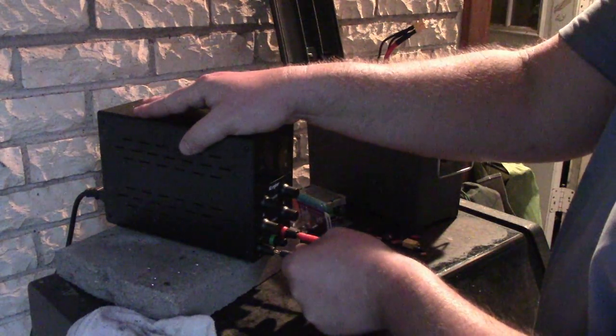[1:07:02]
So let's. Once there's gonna be a spark. Oops. Okay. Oh no. Let's see. We're gonna get a little spark. No spark. What has that done to this end? Oh, it split the difference, of course. Oh my god, tangled. We're now tangled again. We're now at 15.84. I'm gonna see about charging this thing up, just back to 16, I guess.
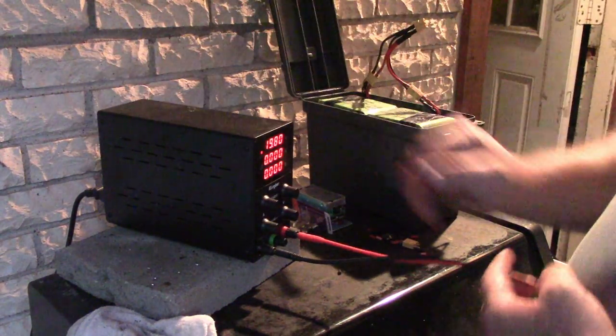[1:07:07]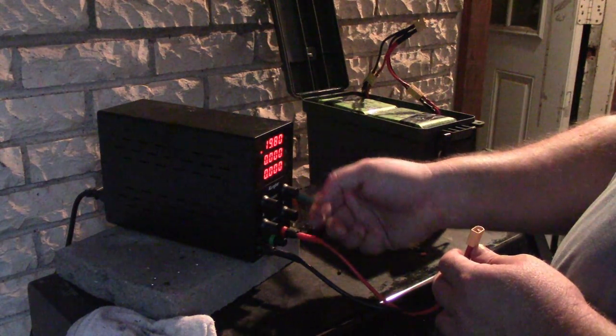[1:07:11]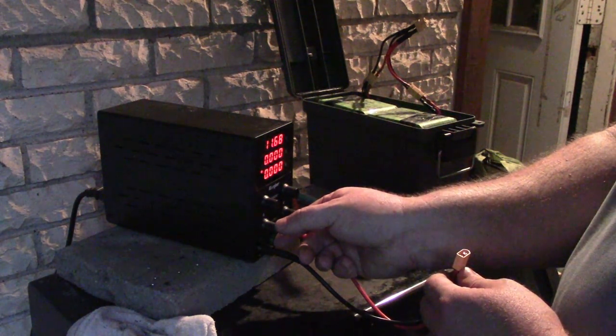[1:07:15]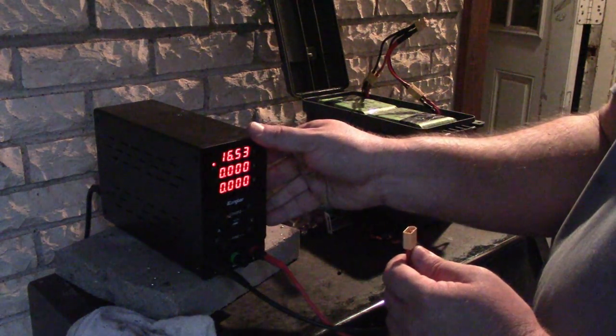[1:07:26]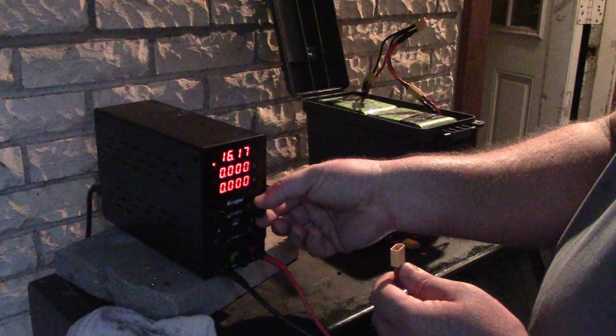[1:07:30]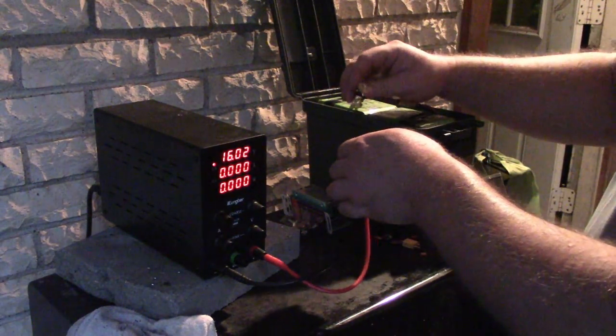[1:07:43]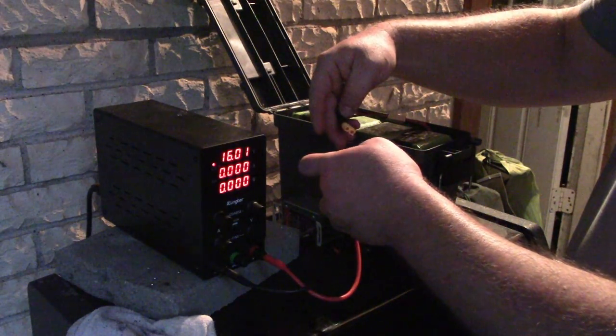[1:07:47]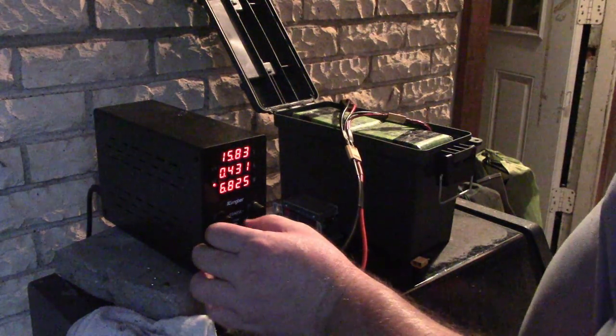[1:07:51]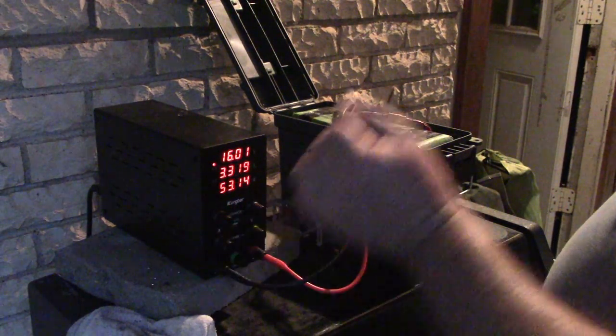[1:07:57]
So, if I turn this on, it's been okay. So let's turn the amps all the way down, up just enough that we get voltage, and then we're gonna set the voltage. You see my numbers? We're setting the voltage to 16 point one. Lead's not long enough. So we should be able to put that on. And then we can crank. Okay. Yeah. Let's let it do a thing. Yeah, little baby.
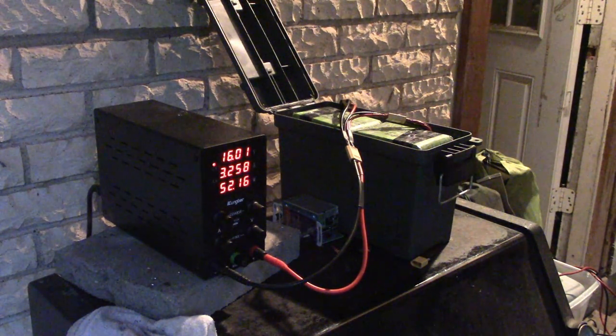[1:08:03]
Oh. Okay, I've changed my mind. I'm going to 16.1 volts now. I'm just going to charge it up to that point, because you can charge it up to 16.8, but I'm trying to undercharge it so it lasts a long time.
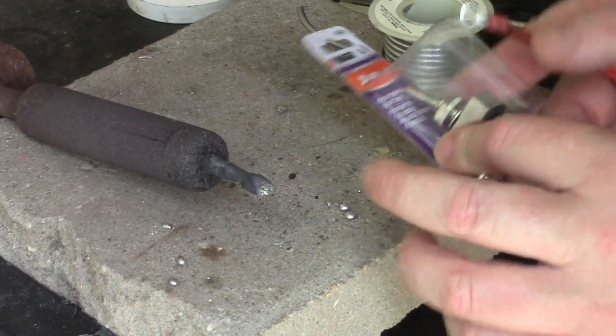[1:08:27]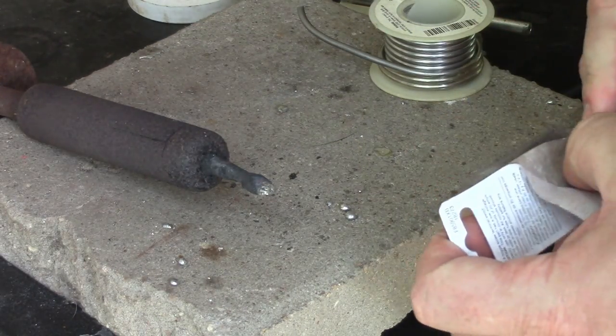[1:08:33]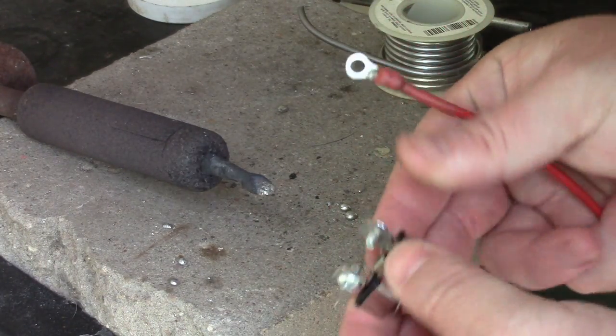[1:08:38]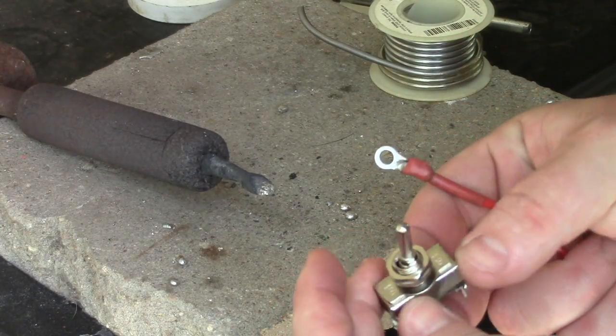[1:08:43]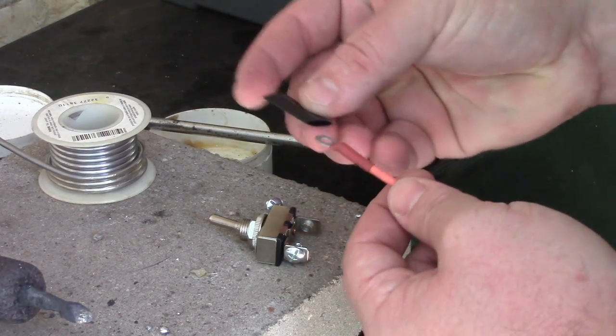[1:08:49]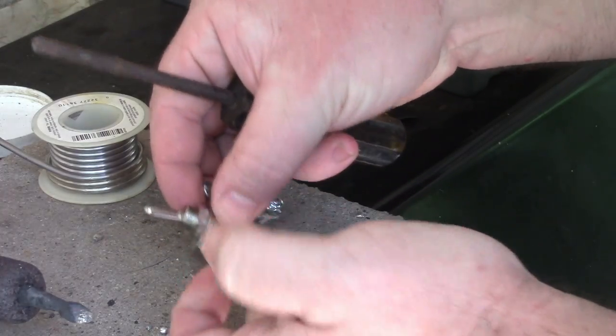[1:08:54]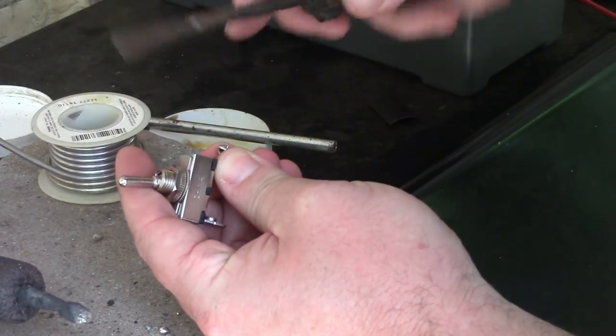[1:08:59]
Yep. All right, I got a switch. It's a 20-amp switch I bought from the auto parts store. I'm just going to get into it. I'm going to figure out a way of insulating these and get these connected, maybe some heat shrink over it, and then I'll get that installed. I'm going to take a piece of heat shrink. It's a pretty big piece. Just slide that on. Okay, so with the heat shrink on, connect this right here. Get that nice and tight.
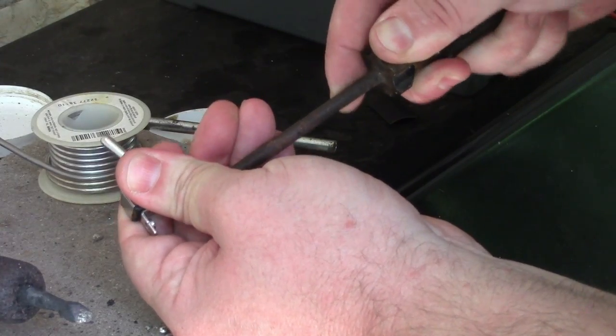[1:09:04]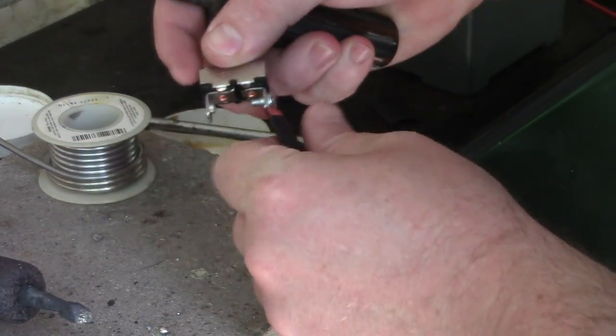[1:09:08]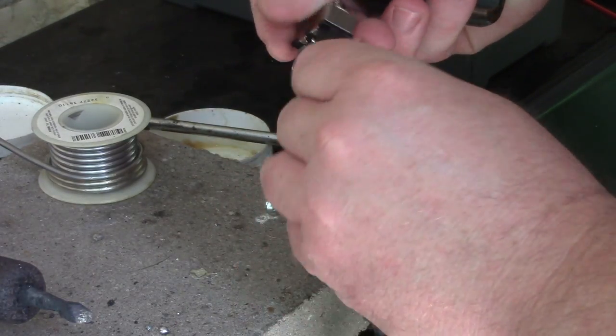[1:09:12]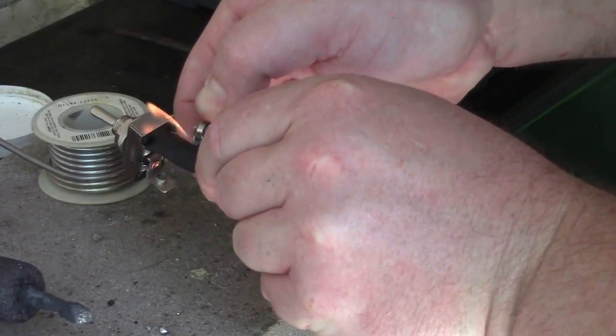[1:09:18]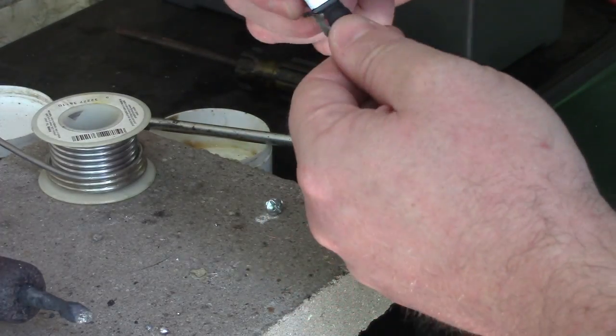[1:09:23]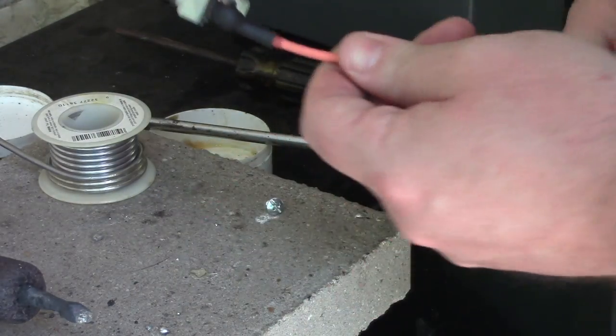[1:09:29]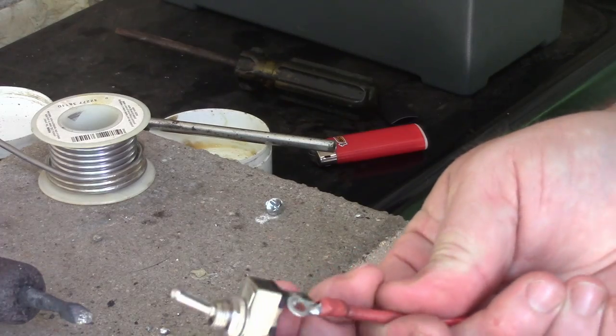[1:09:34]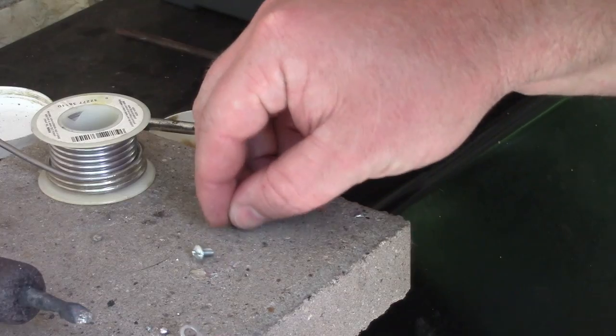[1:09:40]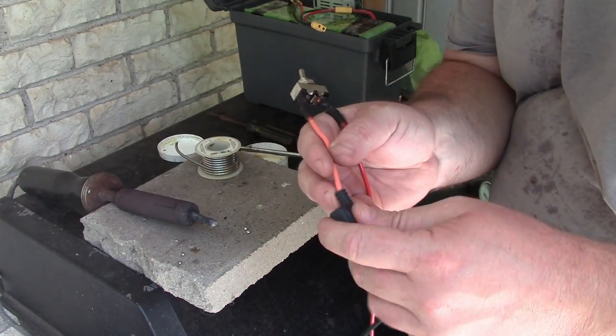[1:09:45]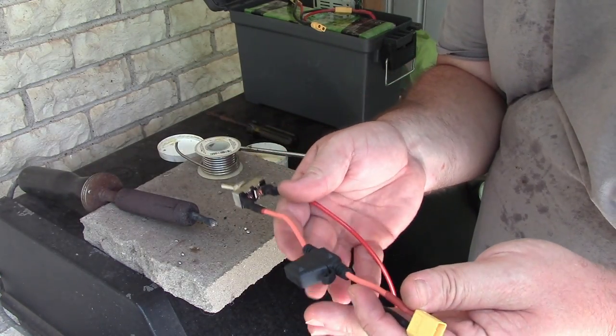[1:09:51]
Dog. I'm gonna hold this up. I'm gonna start shrinking it. That's an okay amount of insulation. I'm hot stuff. I'm happy with that. Okay, so this end will be the lead that goes to the buck converter. I've left it super long so I can cut it to fit. Okay, so now I have XT60 plug going to a fuse, going to a switch, so we can be fairly confident that this thing is turned off and protected.
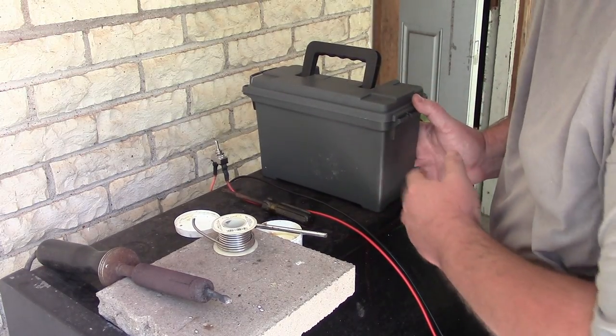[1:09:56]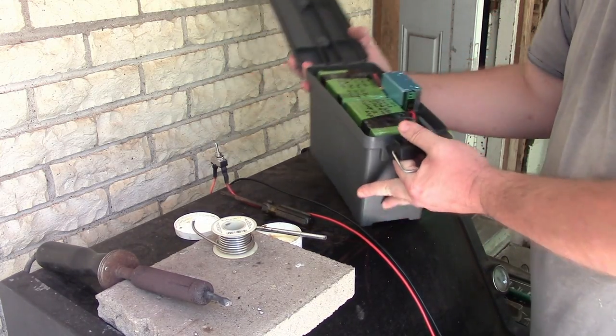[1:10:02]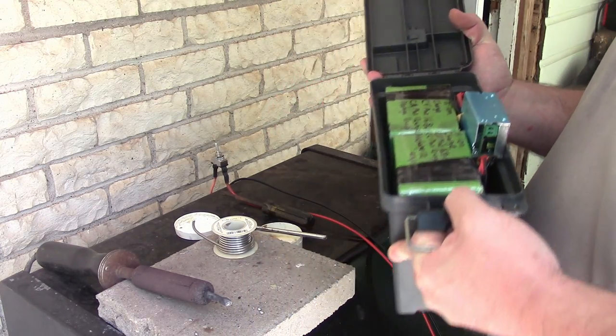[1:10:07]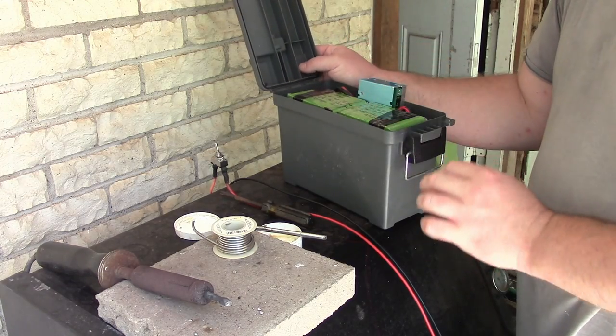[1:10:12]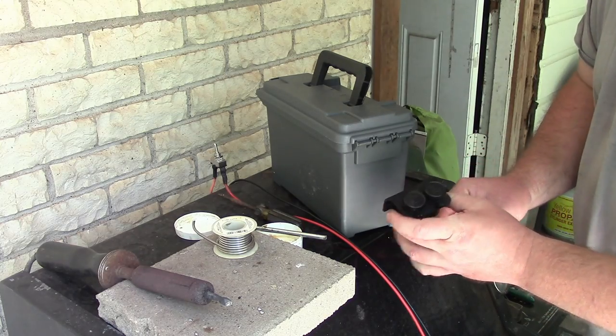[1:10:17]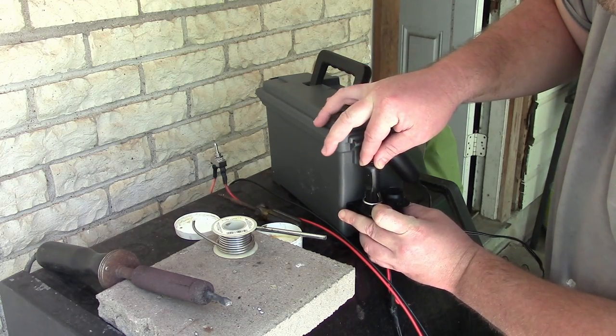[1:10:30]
All right, so I need to figure out where I'm going to mount this stuff. You know, there's almost no room on the inside for anything else, right? The batteries and the buck converter take up almost all the space. So what I'm thinking is on this back corner, way back here, I can put my switch. This is what I think I'm going to do. I think I'm going to mount this down here on the bottom, and that'll give me plenty of room. I'll be able to, you know, use this thing.
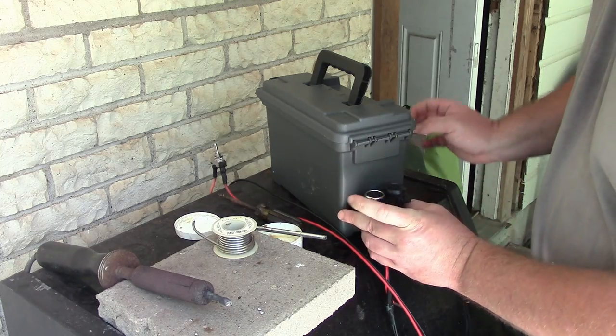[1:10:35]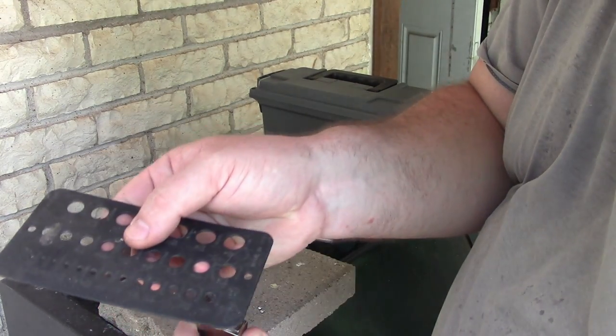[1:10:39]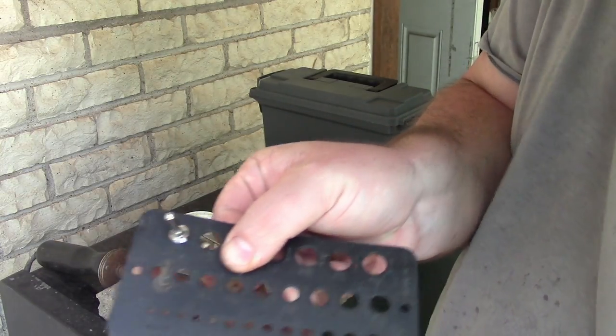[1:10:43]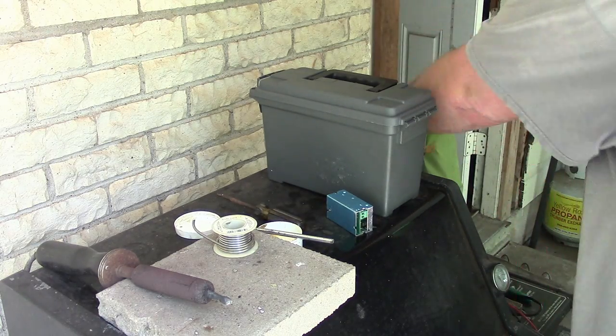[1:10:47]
Cool. Okay, using a drill gauge, I can see that the size I need is a 13/32, and that's what I'm going to use. I'm just going to mount it right here, so.
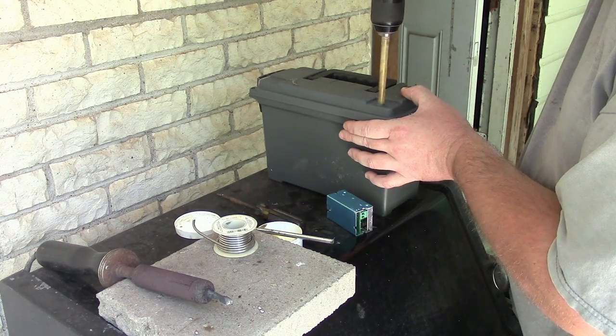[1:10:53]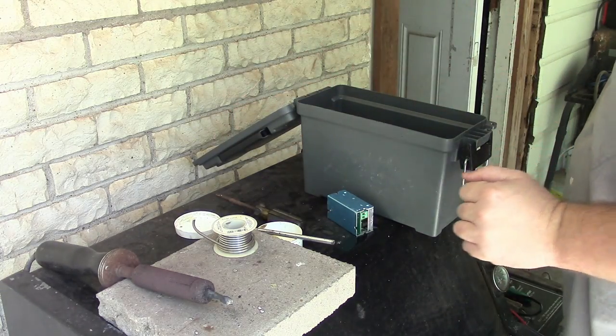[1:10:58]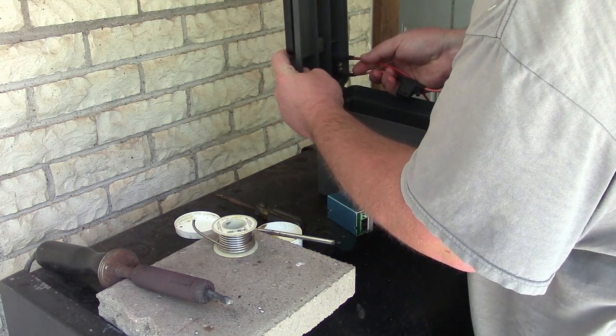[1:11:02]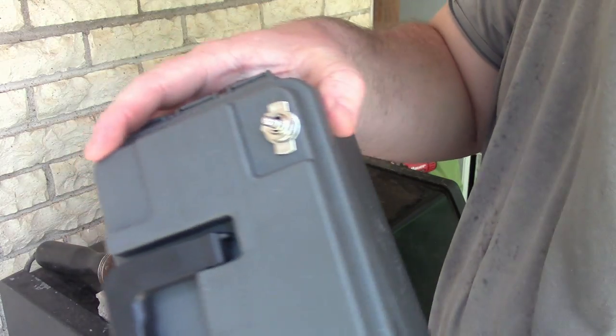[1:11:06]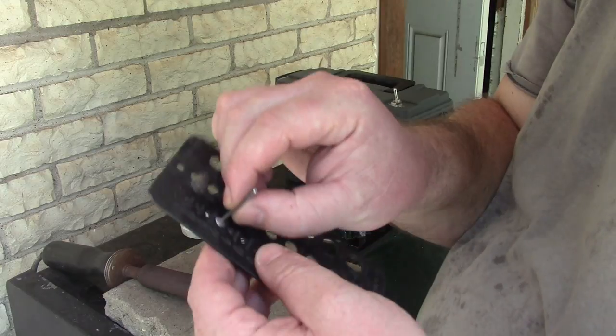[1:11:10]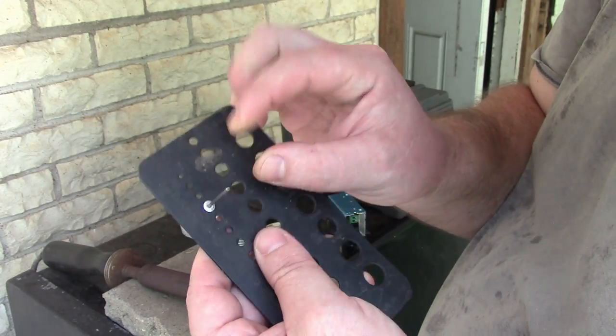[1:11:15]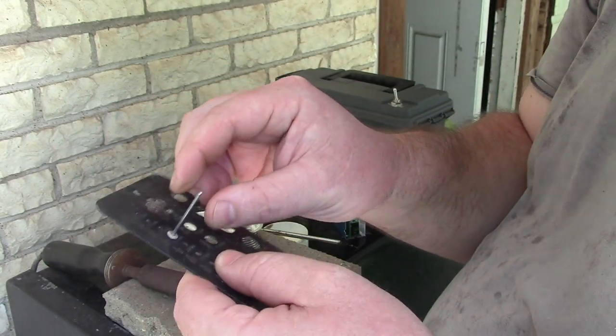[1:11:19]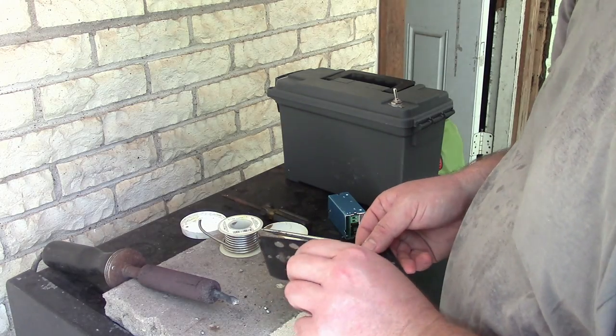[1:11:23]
Oh gosh, I hope it fits. Will that fit? Hell yeah, it fits. Okay. So we have a switch. I think I'm going to use rivets, the same thing with the rivets. I'm going to use a 7/64 drill bit and see how that goes, if I can find one. I broke almost all my small drill bits, but we'll see what I can find.
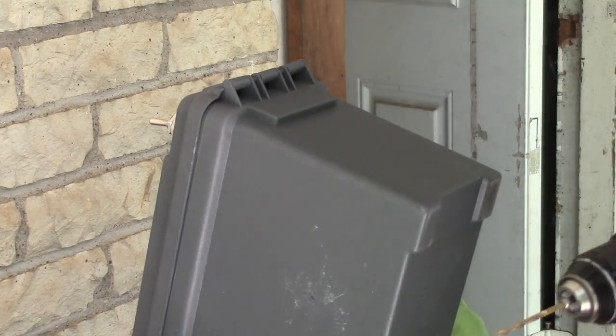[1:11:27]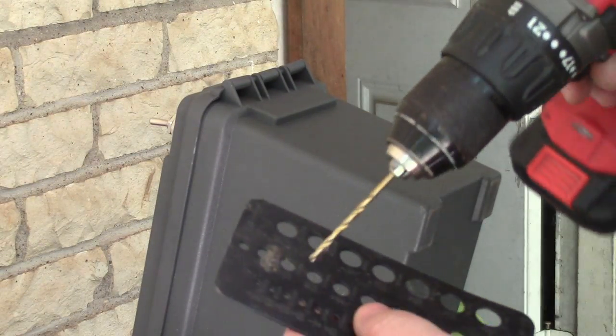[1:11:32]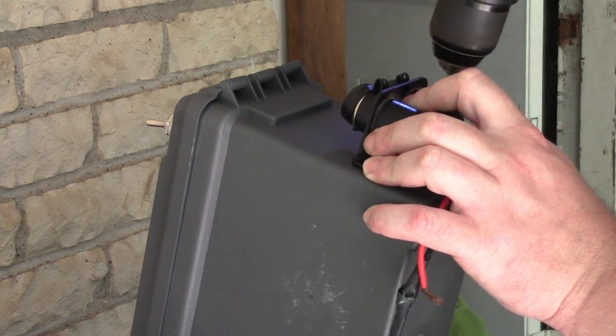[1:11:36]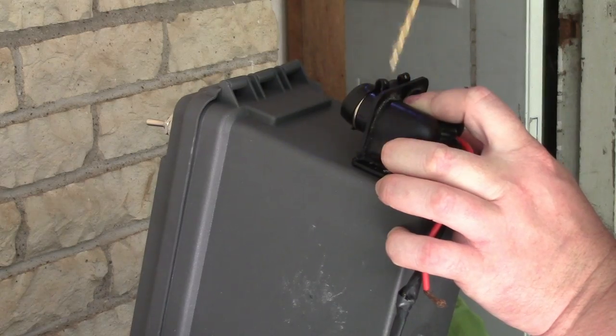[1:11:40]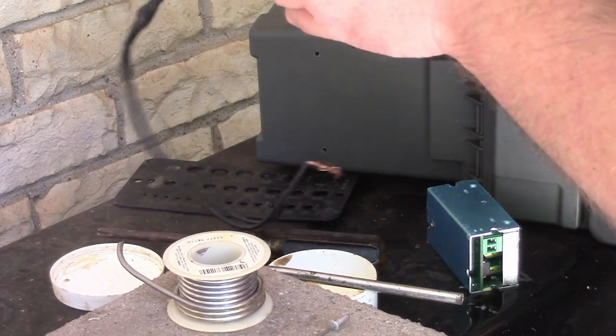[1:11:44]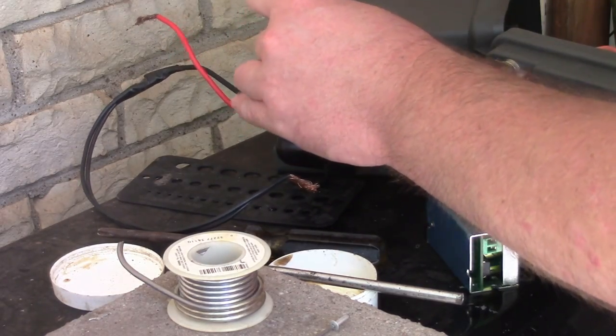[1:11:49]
So I didn't quite find the size I was looking for. This drill bit is labeled a 1/8, but it fits in the 7/64 hole. I'm gonna drill this thing, and then I put the rivet through the holes.
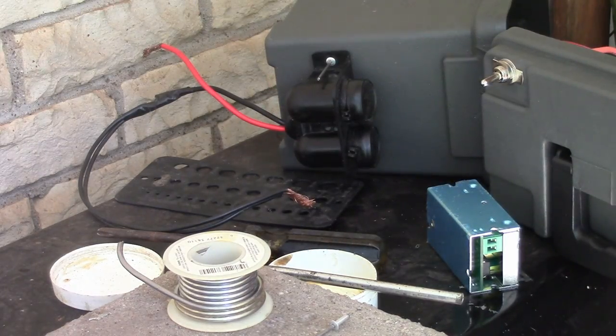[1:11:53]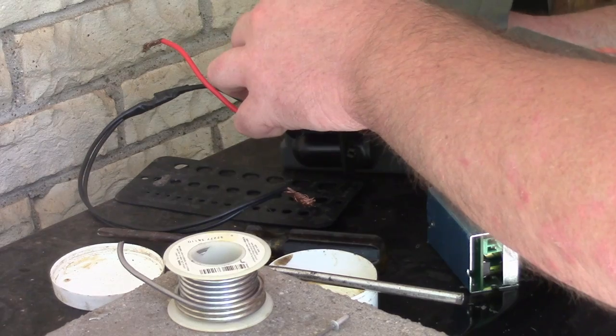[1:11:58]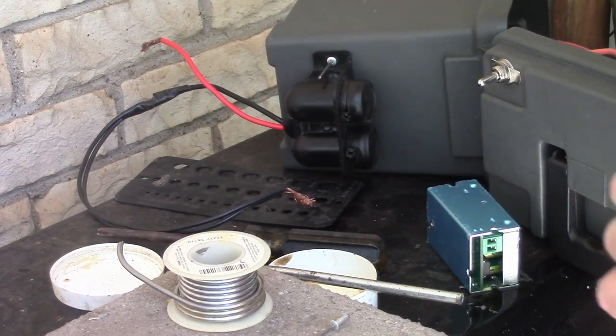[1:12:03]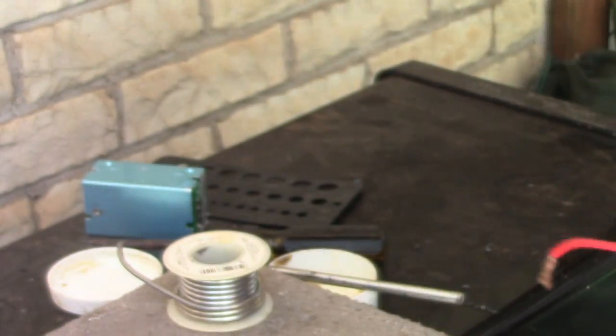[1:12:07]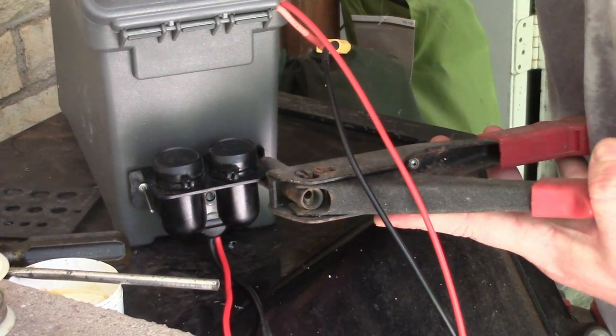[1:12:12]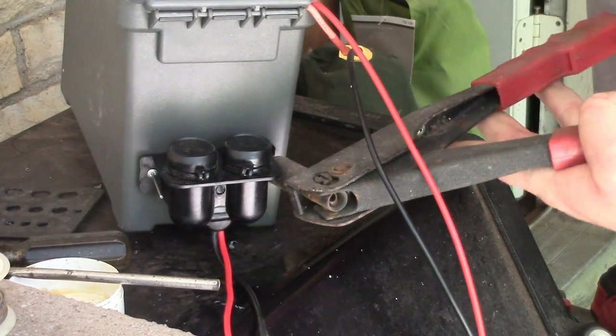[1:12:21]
Ooh, I have just enough space for one washer on the inside. That'll help make it strong. Okay, that is excellent. Can you see that? We're gonna have washers inside the rivets there. I'm gonna hold the washer with one hand and try to squeeze this with the other. Push it down tight. Squeeze. One more.
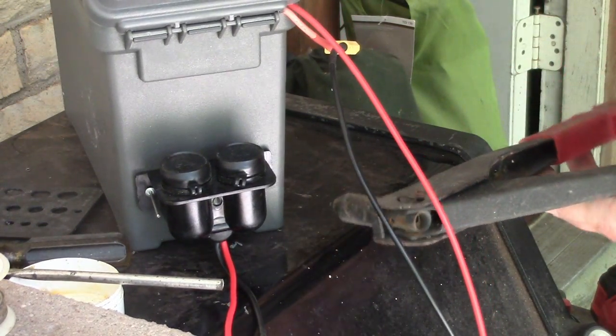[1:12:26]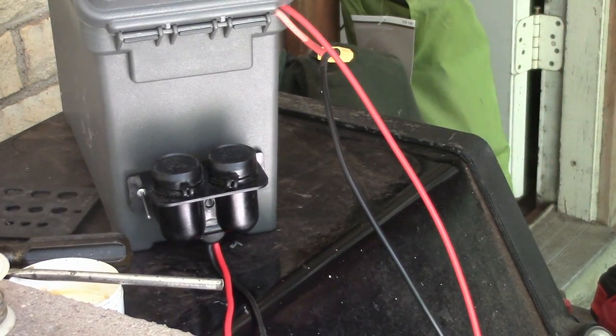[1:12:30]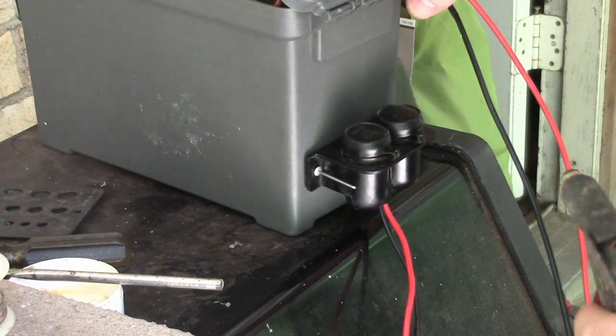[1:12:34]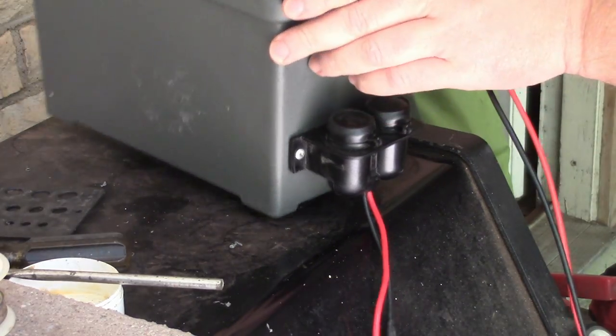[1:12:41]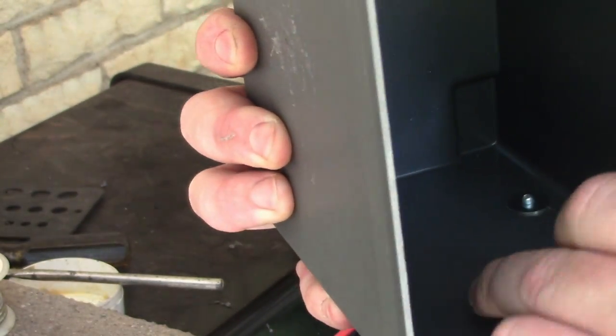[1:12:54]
Oh wow, that got real tight on that plastic. Okay, it didn't break the thing though, so I'll roll with it. Nine. Goodness. Okay. Oh, the washer fell off that side. Whatever. See how one of my washers slid off? Oh well. I tried. It's in there.
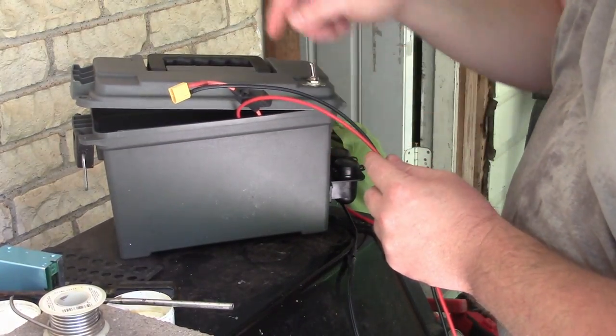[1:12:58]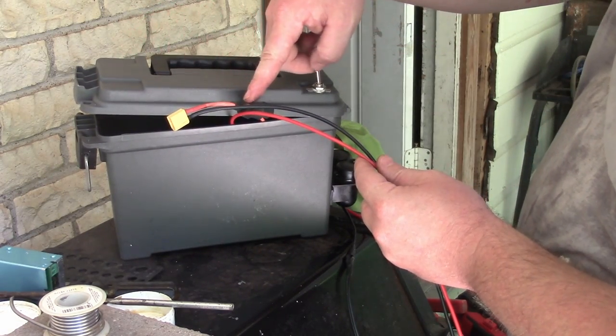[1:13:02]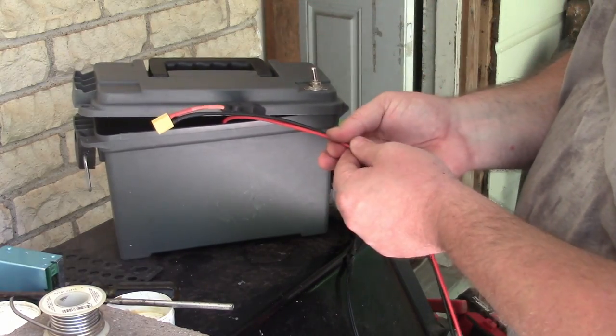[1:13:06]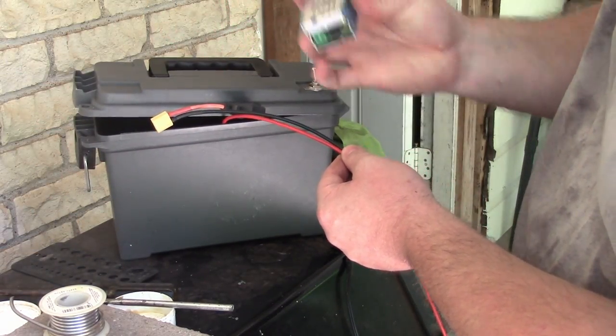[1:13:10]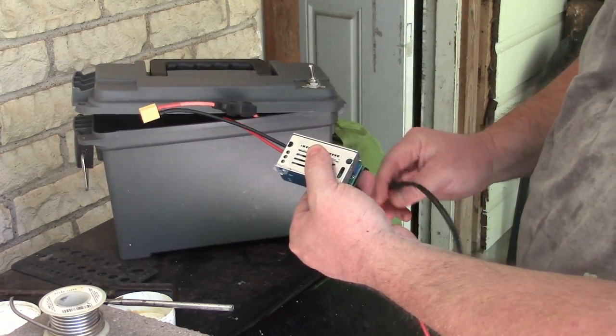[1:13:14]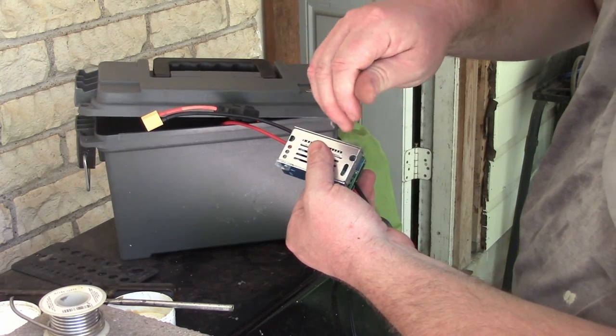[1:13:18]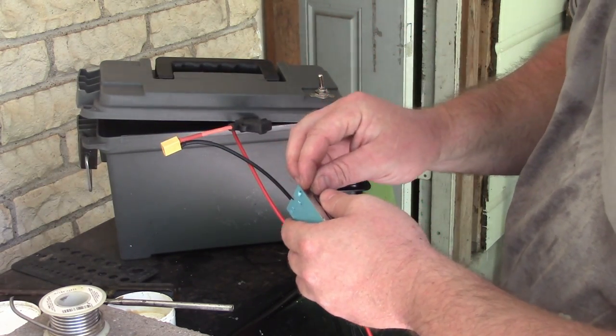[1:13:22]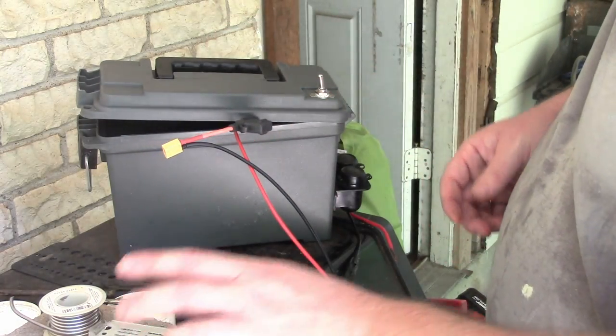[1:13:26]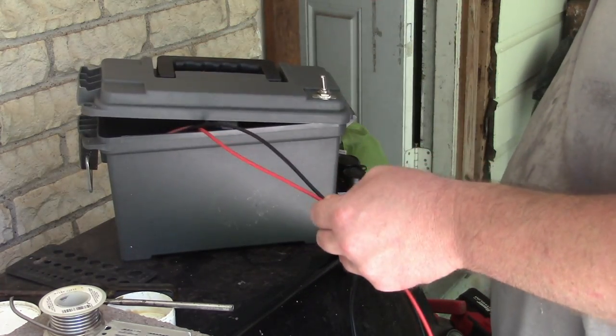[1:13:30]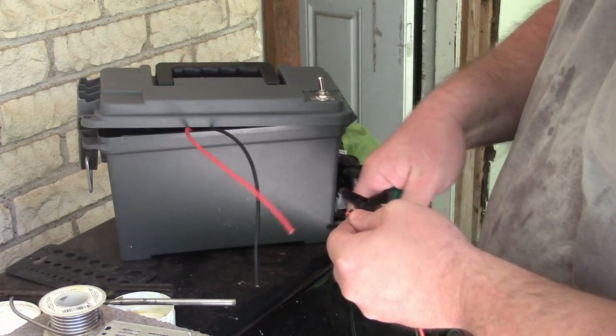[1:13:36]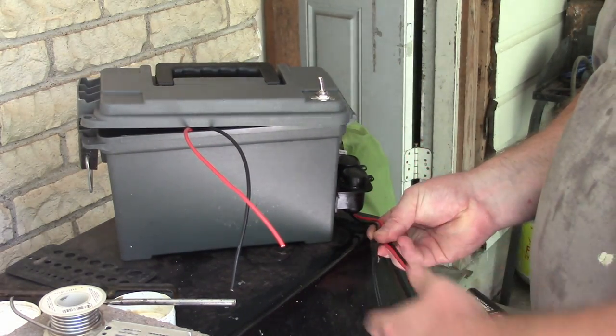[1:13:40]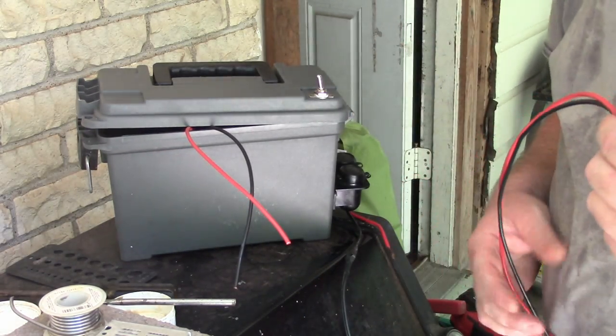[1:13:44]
All right, so just to recap, the battery will plug in here. They'll go through the fuse, through the switch, to these wires here that will go to the input to the buck converter. And then on the output of the buck converter, that's where the plug will come from. And then I can dial in the voltage to the 12 volts that I want to regulate it to for my CPAP. But you could regulate it for other reasons, of course. I'm just going to leave myself a little bit of wiggle room with these wires right there. Then I'm going to extend the length of these and then cut these to fit. And then we can assemble this thing.
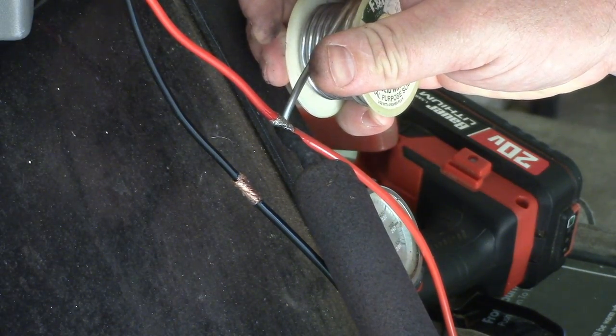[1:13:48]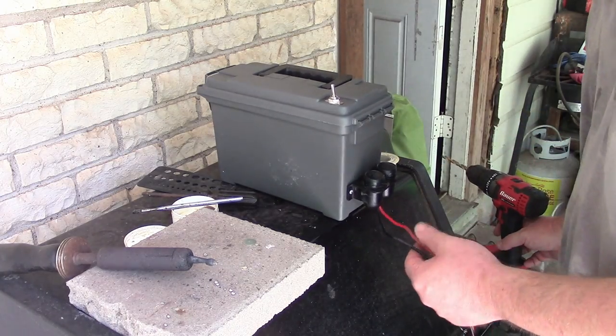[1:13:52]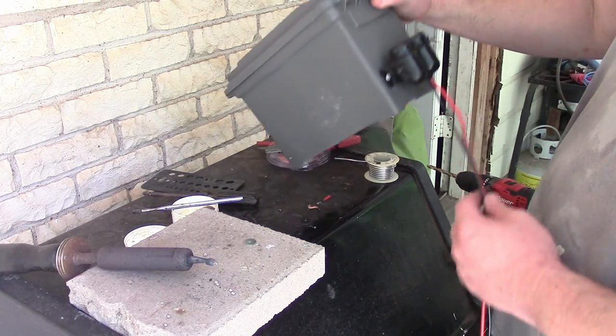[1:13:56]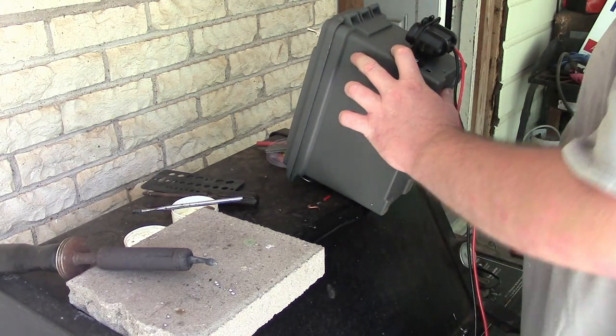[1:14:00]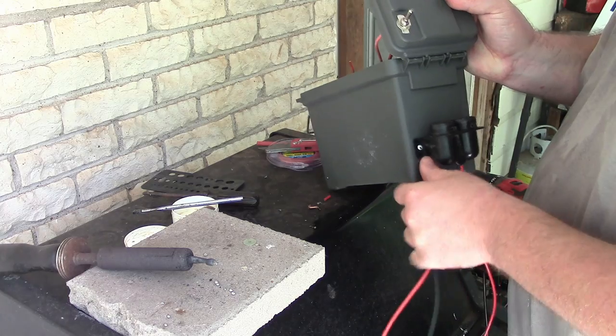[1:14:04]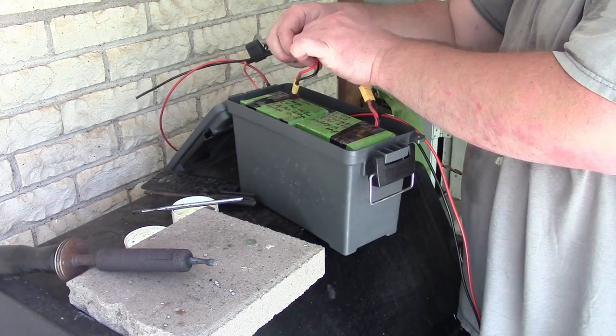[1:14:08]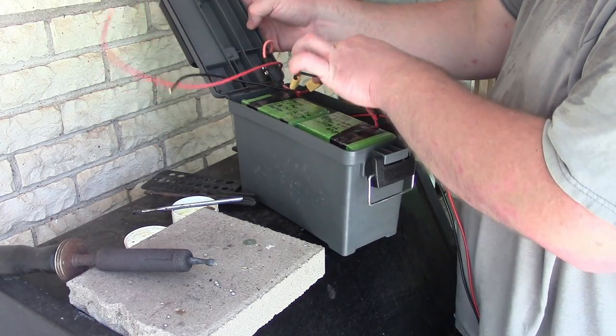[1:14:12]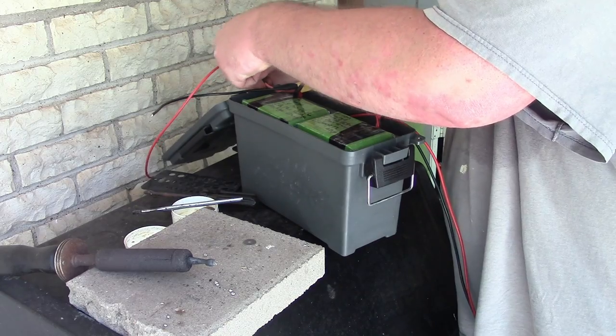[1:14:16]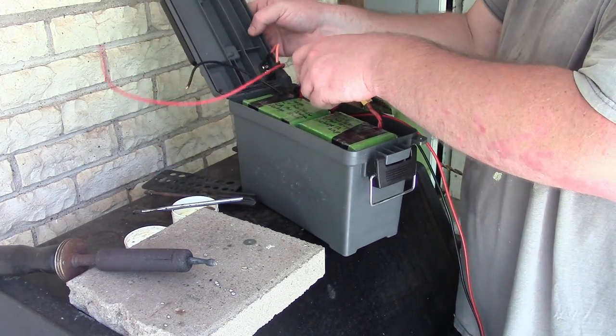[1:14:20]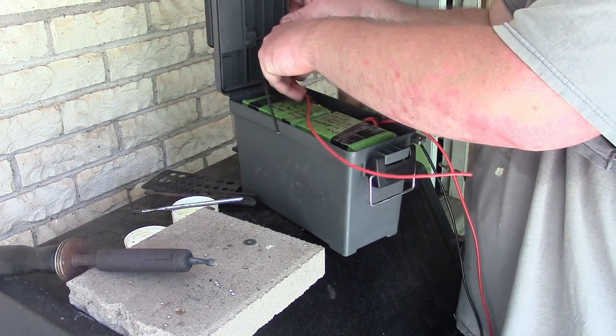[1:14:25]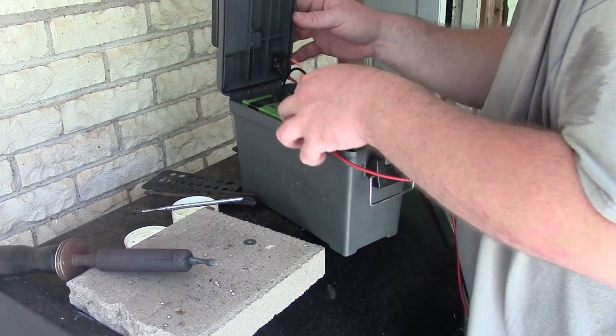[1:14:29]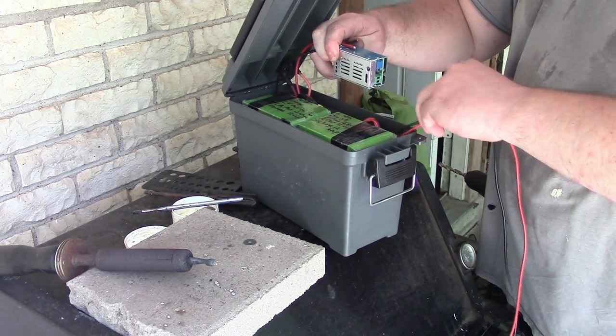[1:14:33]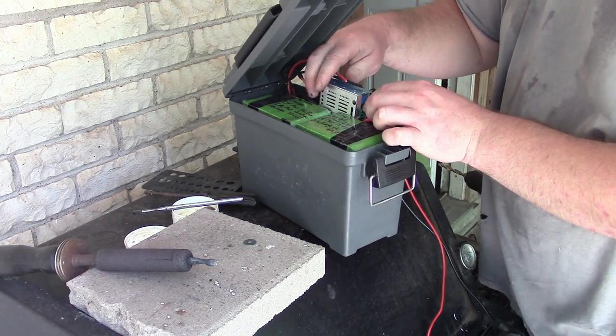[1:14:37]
Come on. Yes. Yes. Accept the lid. Okay. So the heat shrink is on. Now I just need to figure out where I want these wires to run. Right here. Whoa. Quick. I'm going to just feed these puppies right in. And the batteries go in. It connects to the switch. Do I have a fuse in here yet? Yeah, no fuse, so that's whatever. And that can get crammed down just like that. The input, and we'll have the output. Oh wow, we are getting close.
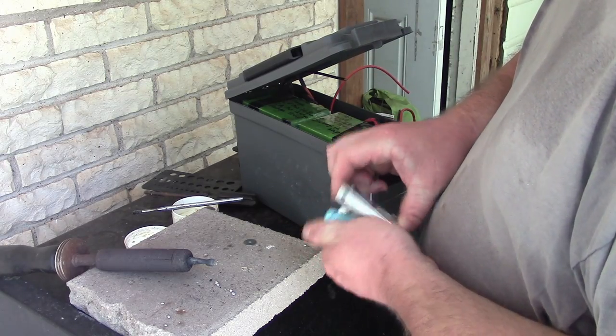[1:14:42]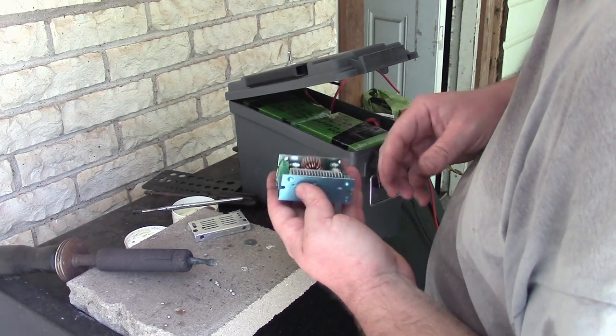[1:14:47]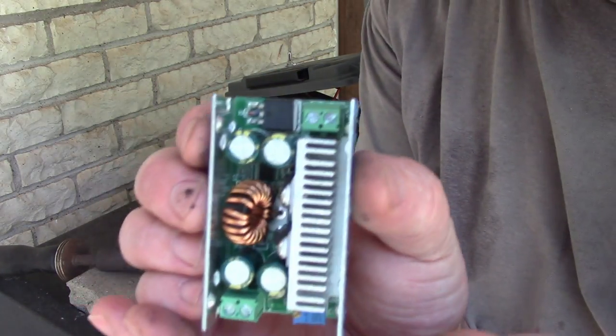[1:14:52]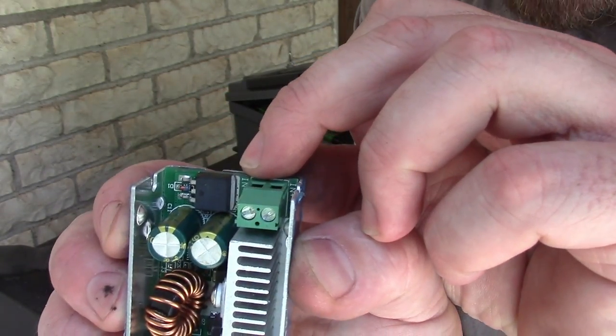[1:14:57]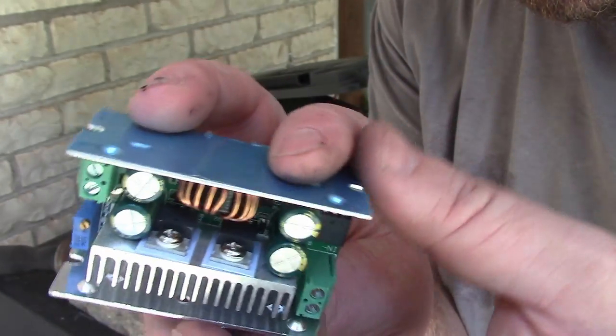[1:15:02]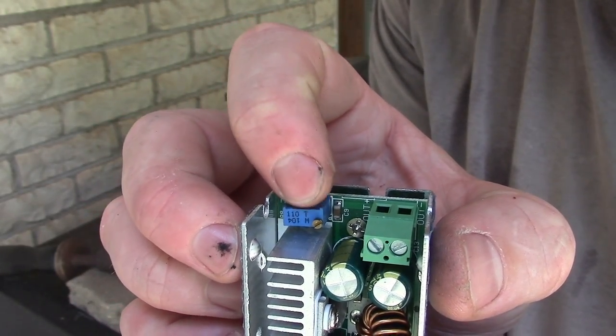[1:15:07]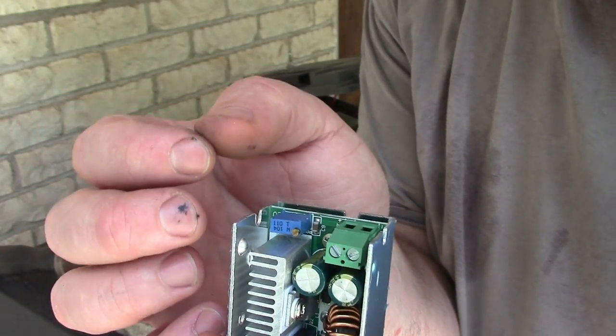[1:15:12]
Okay, so how's this thing gonna work for me? Oh god, hope I didn't break it. That's a little tight. Need a tiny screwdriver. Let's see, this is the buck converter. It's labeled input, positive, negative. And then on the other side, you got the output, positive, negative, but you have this little pot right here, which will control the voltage. And I think you need to put a load on it, but we'll figure that out in a second.
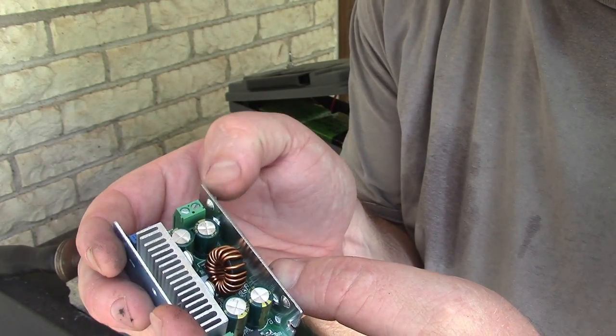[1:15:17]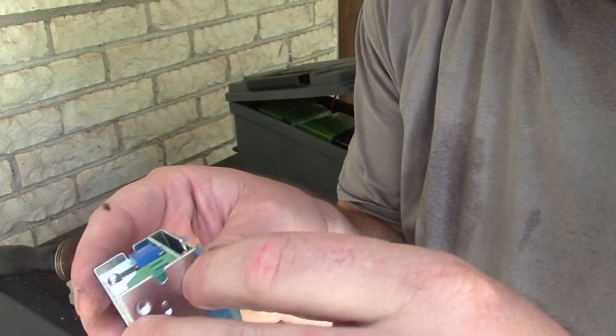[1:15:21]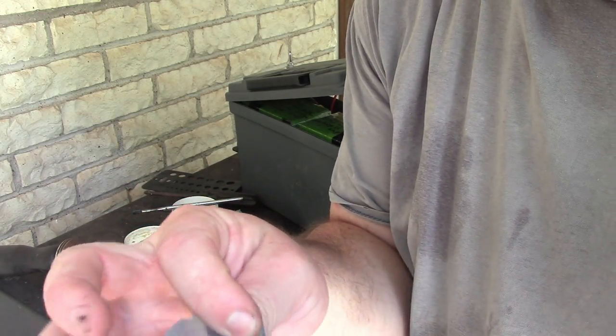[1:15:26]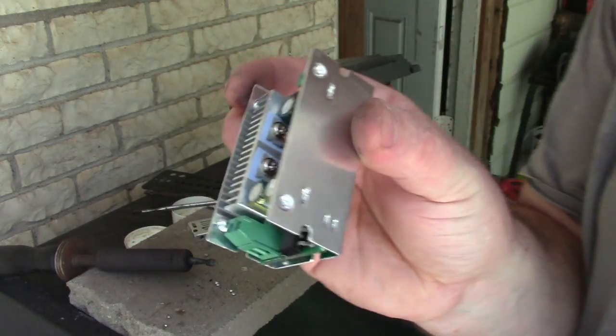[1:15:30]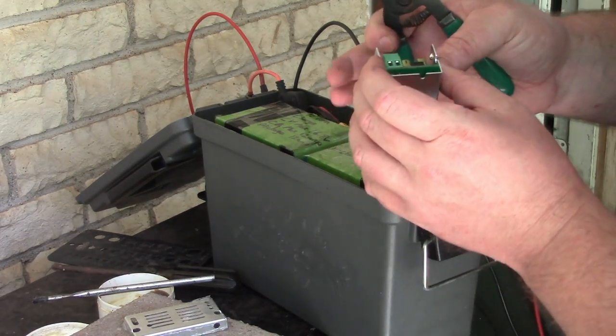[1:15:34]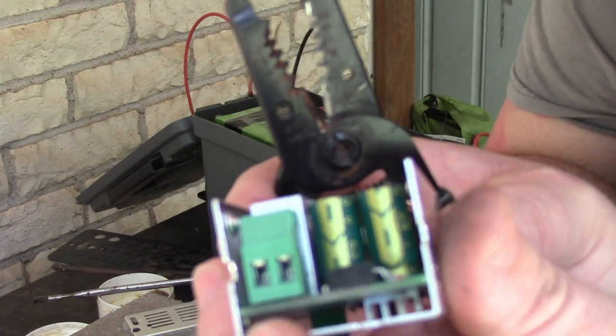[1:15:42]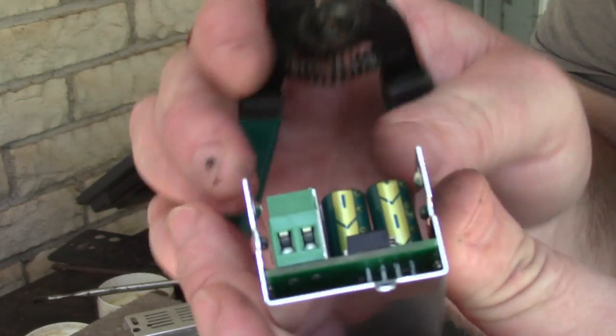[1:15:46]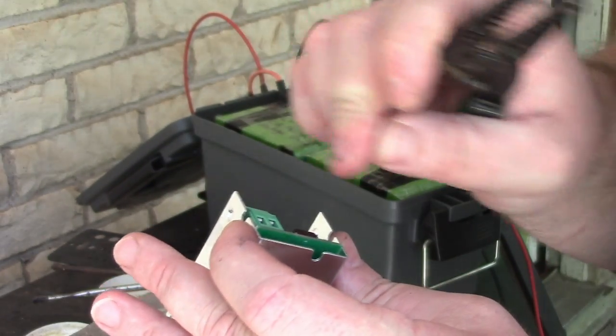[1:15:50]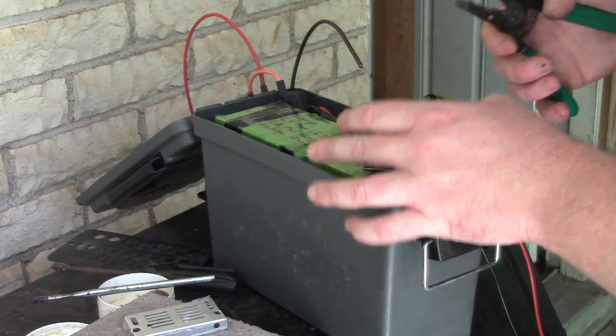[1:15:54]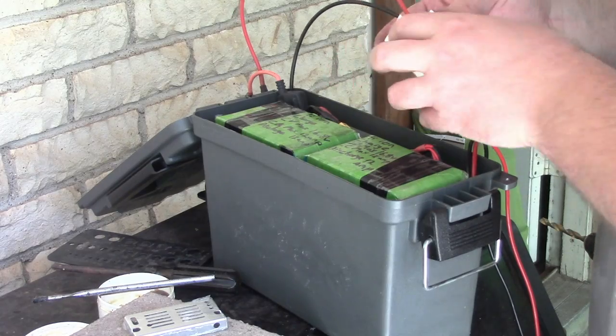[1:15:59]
I mean, yeah. Ooh, should I peel it? Or I could leave it. It's not hurting anything. Oops, now it won't stay. Okay, we're peeling it, whatever. Ooh. Okay, so there is not a whole lot of space in here. And I guess these terminals, we're going to have to keep them from shorting out. So I'm just going to cut the wires kind of short, cram them in there, and have enough insulation that I can kind of wiggle it down in there. Oh, I get it secured. Okay. So that's the input. Cool.
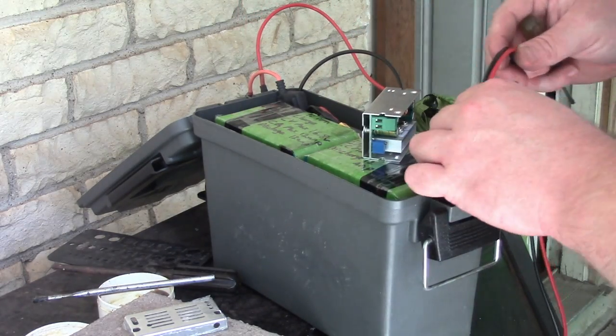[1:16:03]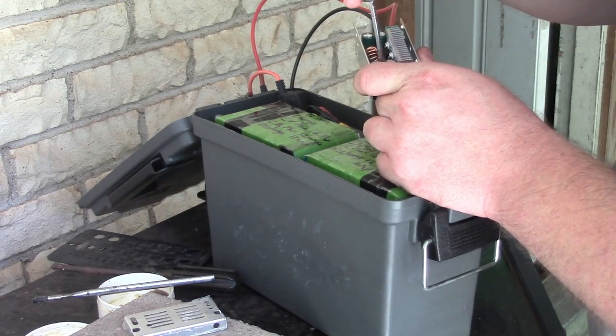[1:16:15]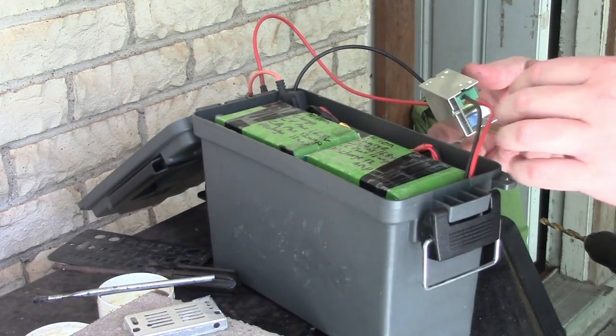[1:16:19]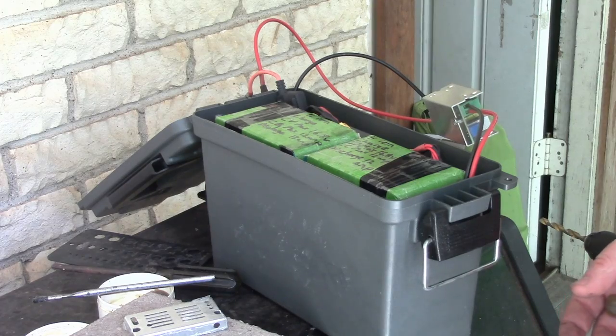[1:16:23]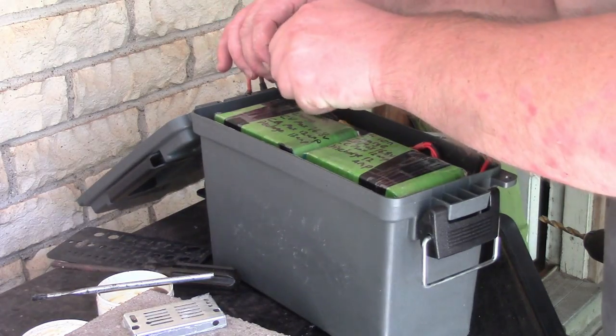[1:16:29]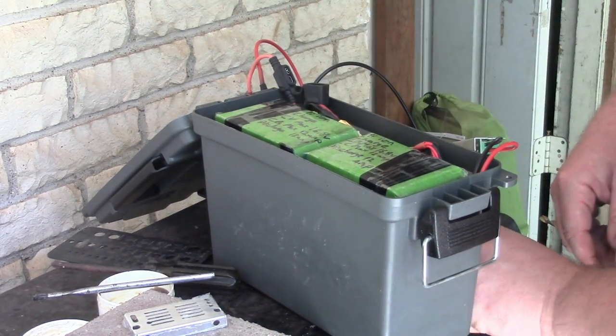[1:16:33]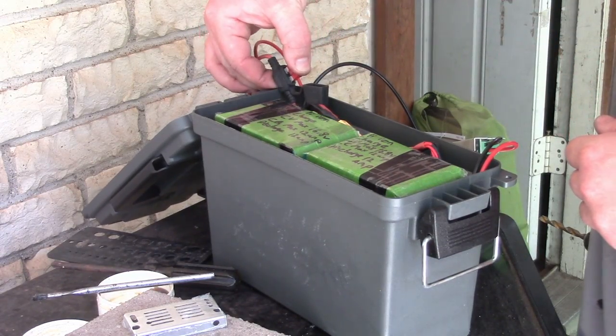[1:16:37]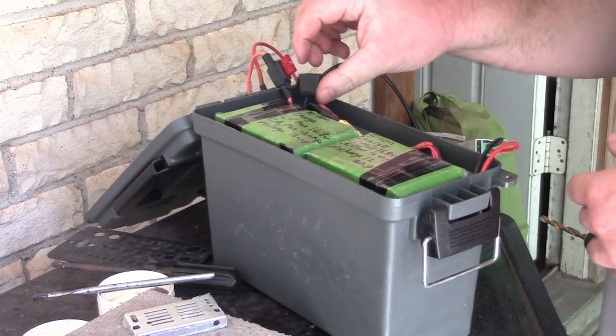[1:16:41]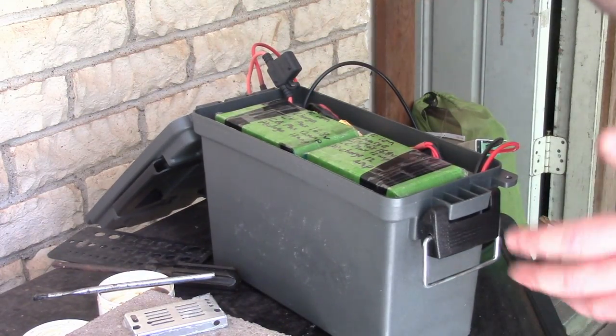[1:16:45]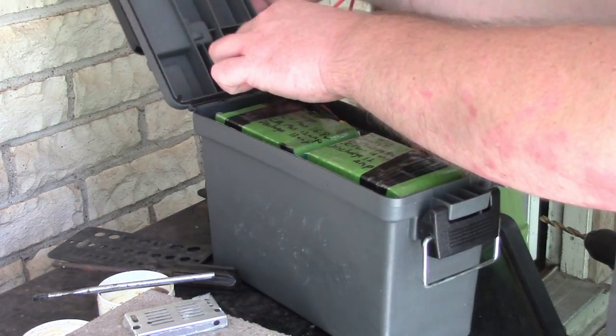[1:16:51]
Now for the output, I guess I want about that much wire. Oops, I guess I can't see anything I'm doing here. Sorry. So I guess in theory we're ready for a test. Ooh, nerve-wracking. Okay, so let's just give this a test. I'm going to put in a 10 amp fuse, just to be on the safe side. This buck converter is rated for 10 amp continuous, and I couldn't imagine needing more than that. So there is the fuse.
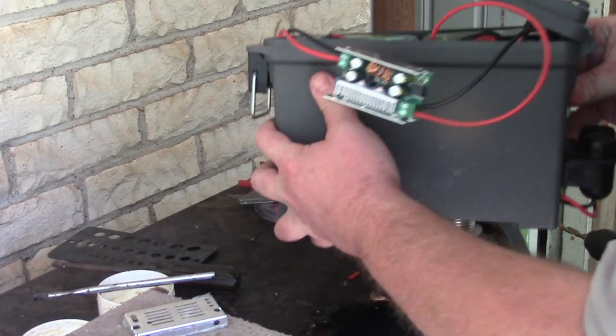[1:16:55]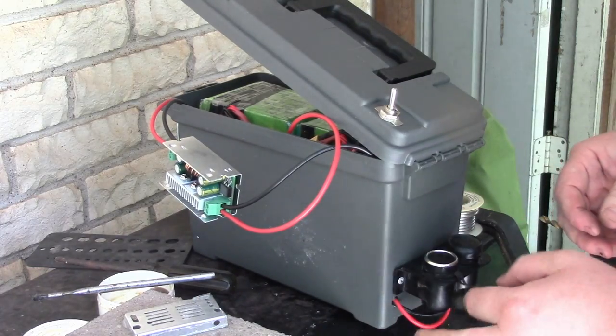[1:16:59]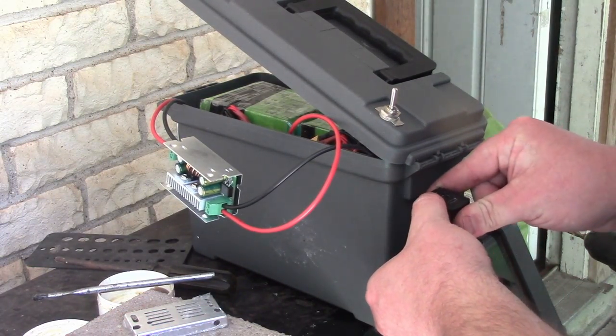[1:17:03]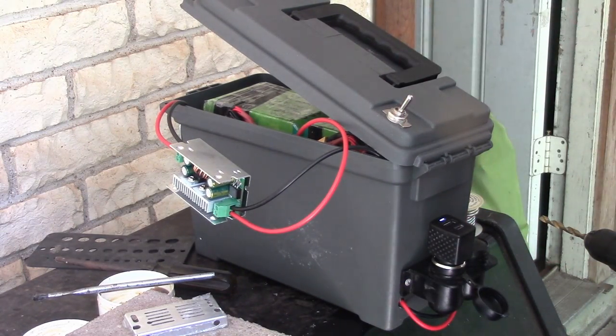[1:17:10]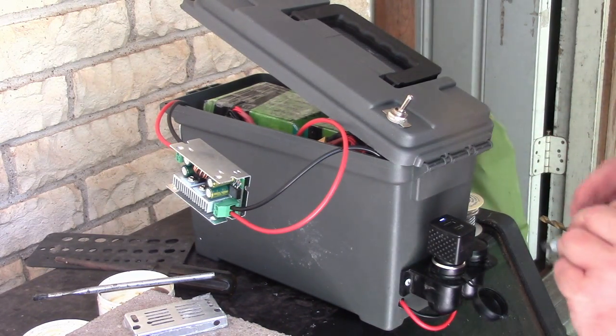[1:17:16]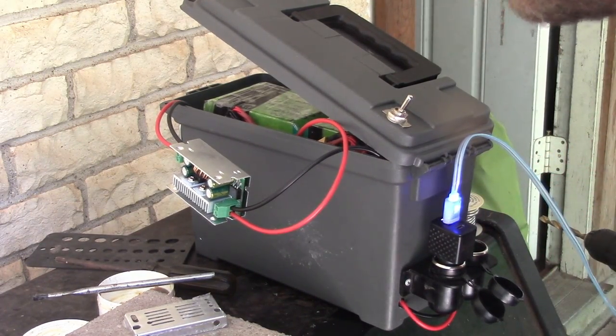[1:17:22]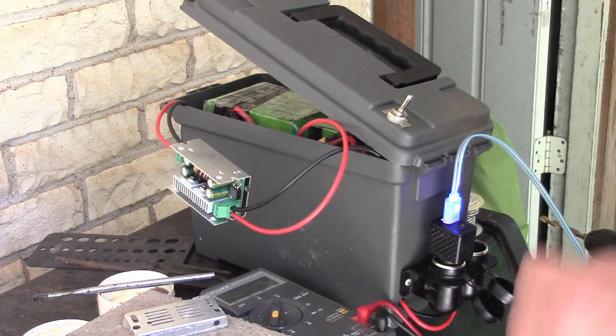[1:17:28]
Now, in order to test this thing, I've heard that it helps to put it under load. And I'm just going to see if it comes on real quick. Okay, that thing comes on. I'm just going to try charging the phone as my load. And then in this other port, I'm going to get out the volt meter. I'm going to very carefully try not to short this out. So I'm going to the center contact. So it says it's at 12 volts.
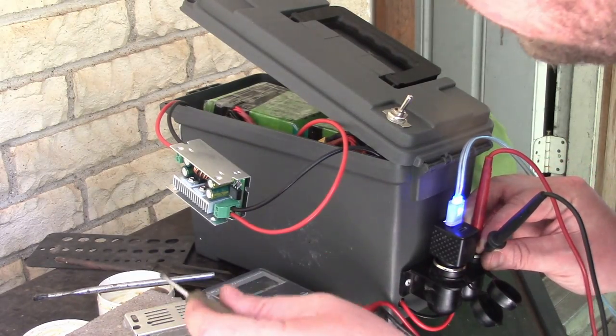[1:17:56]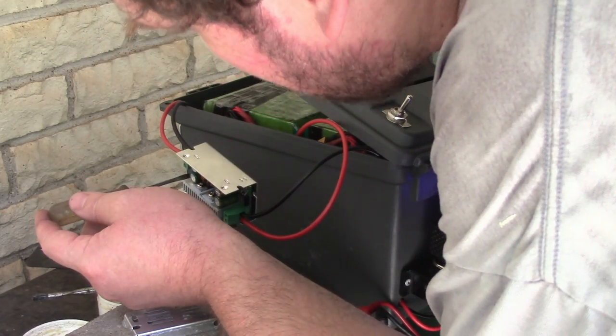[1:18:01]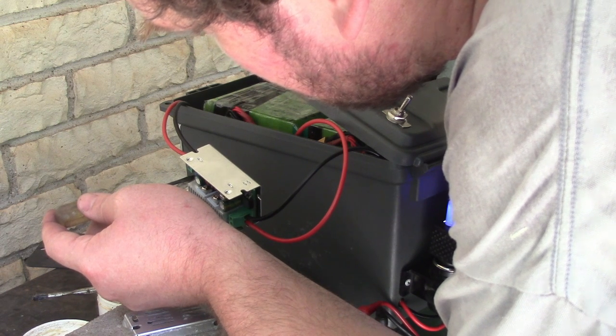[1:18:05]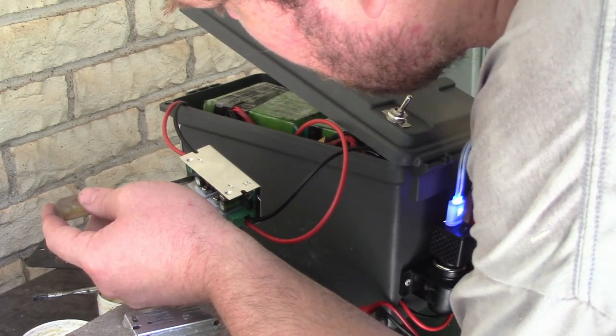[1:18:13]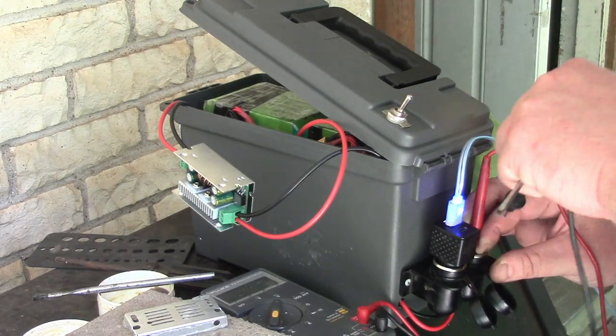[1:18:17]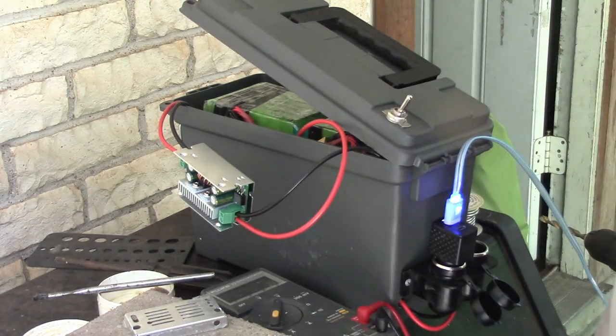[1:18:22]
Cool. Volts. Okay, so what happens if I twist this thing? Okay, that makes it go down. That makes it go up. Okay, so it was set to 12 volts. I'm going to go to like 12.1 volts. I'll try that. Neat.
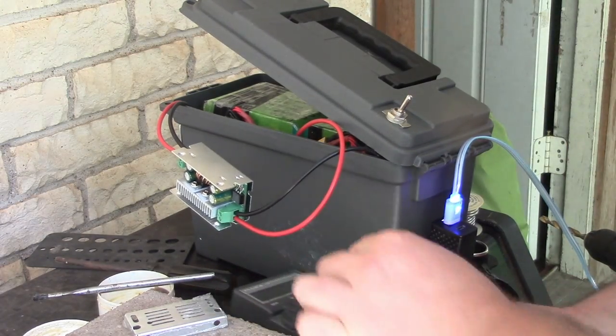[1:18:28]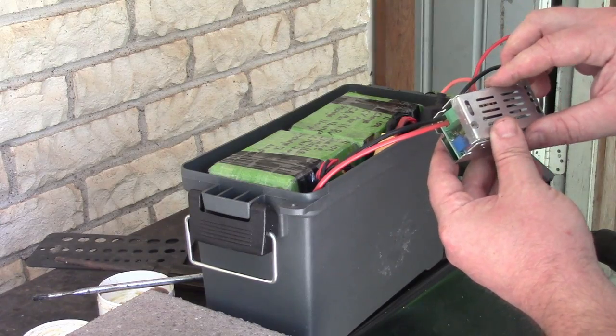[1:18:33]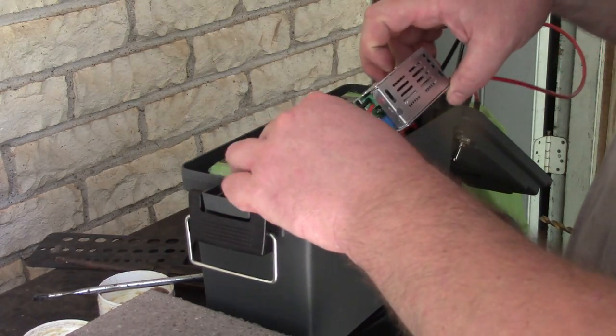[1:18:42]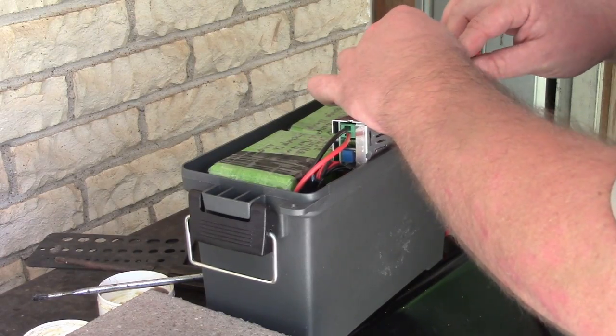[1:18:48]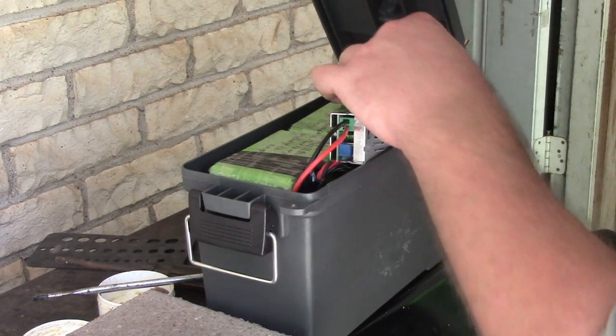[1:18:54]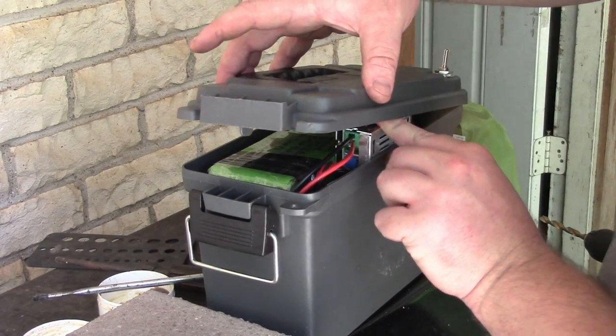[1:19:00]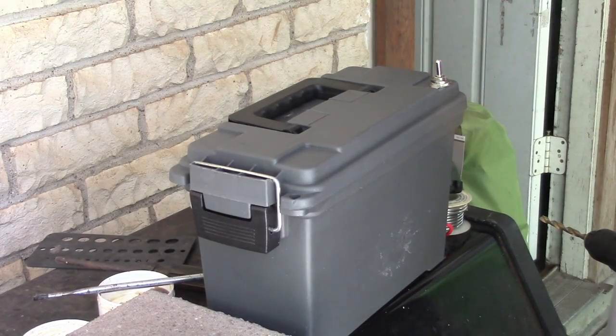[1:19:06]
Okay, you buy a 12 volt buck converter, sometimes it might come set at the voltage you're looking for. Let the settings stay where they are. I'm going to poke these wires down a bit. Oh, neato. Okay. That all close. Wow.
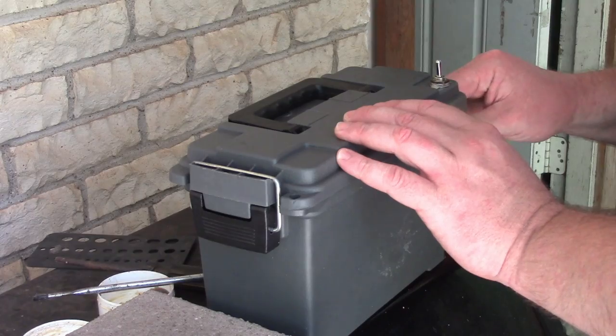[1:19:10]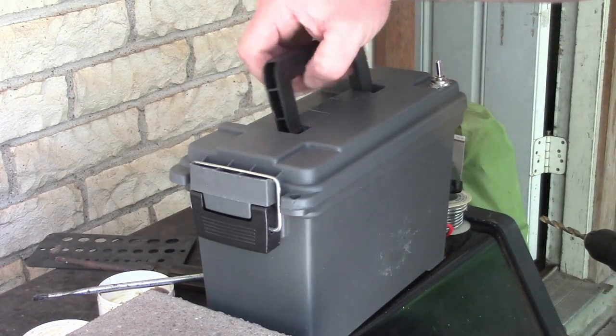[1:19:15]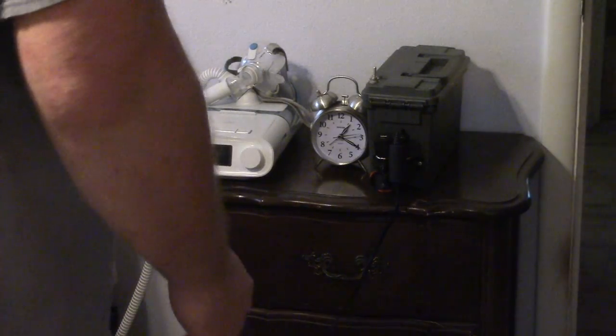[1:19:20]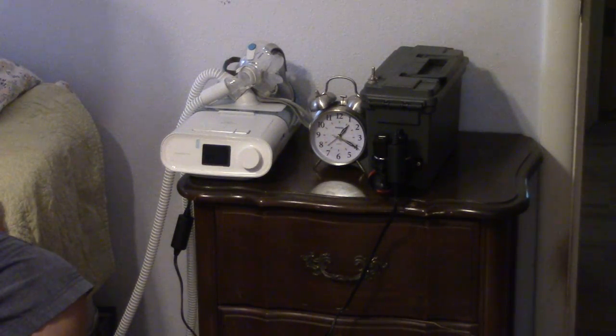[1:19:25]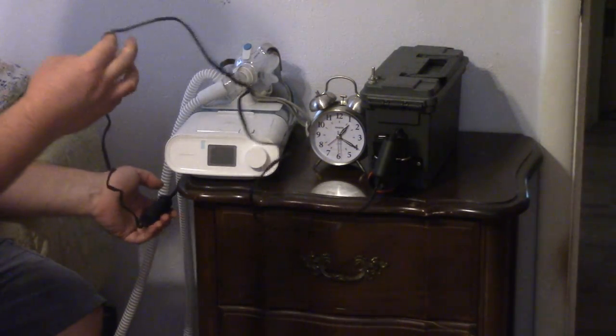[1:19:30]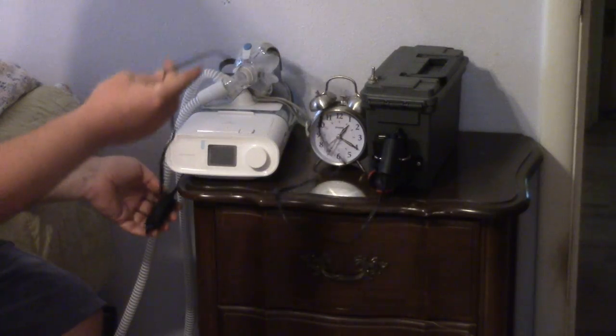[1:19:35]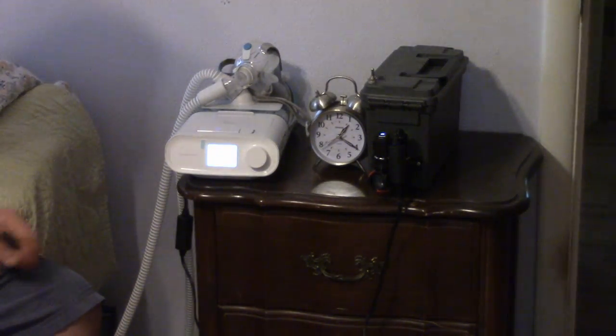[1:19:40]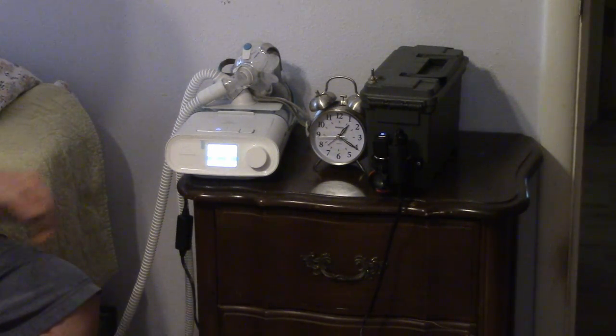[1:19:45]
Okay, it might be ready for a real test. Okay, I'm set up to do a test. So this will be with the humidifier on to see if it can handle the load. So I have the wire going from the plug to the CPAP, and CPAP is getting power, very good. Let me just flip this on real quick.
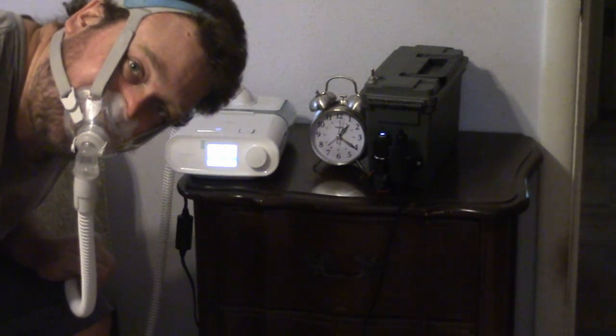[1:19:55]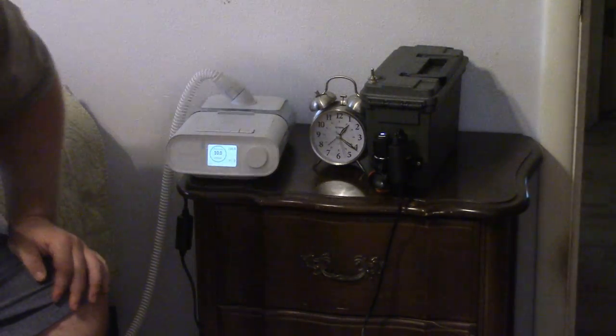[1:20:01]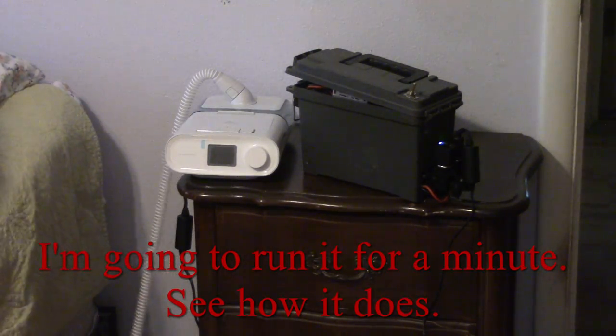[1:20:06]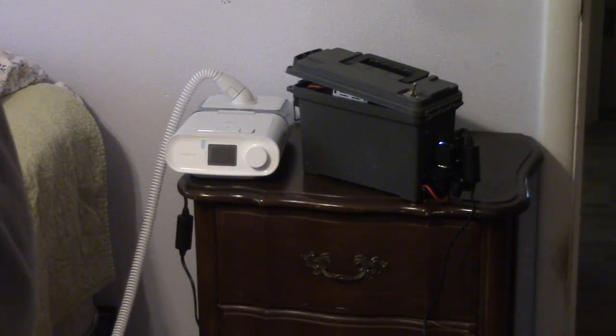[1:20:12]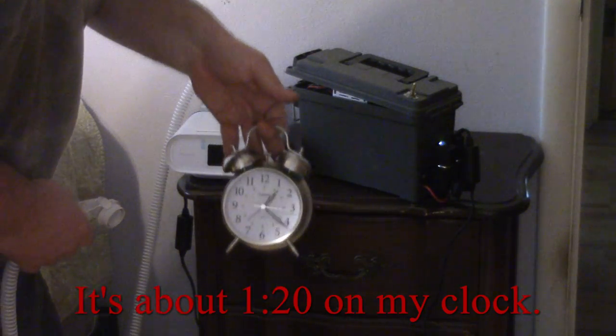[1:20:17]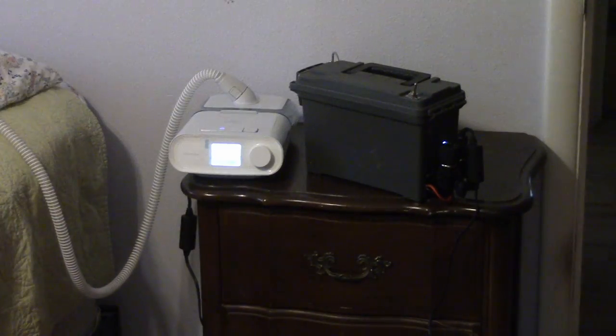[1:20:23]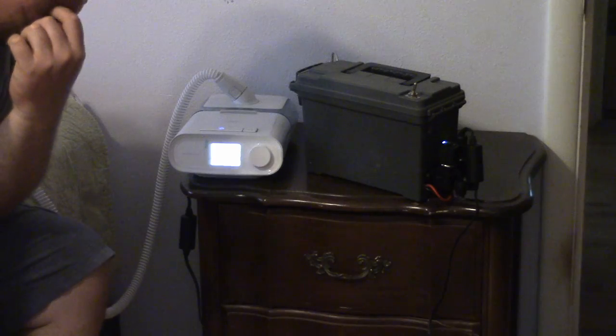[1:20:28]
Okay. Well, it sure doesn't seem to work. All right, I'm going to run it for a minute. See how it does. We are at, it's about 1:20 on my clock, so. Well, let's do like 10 or something. Oh my God. I fell asleep. Half an hour on the thing.
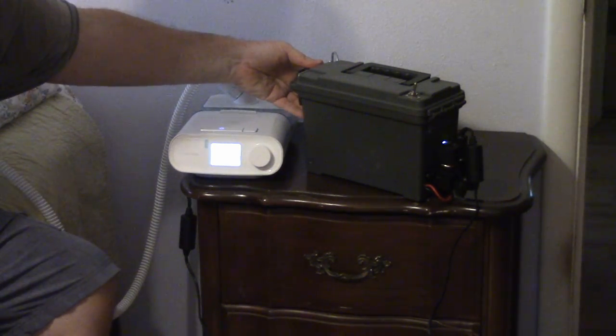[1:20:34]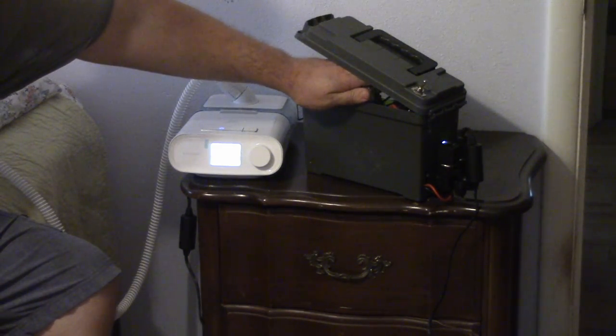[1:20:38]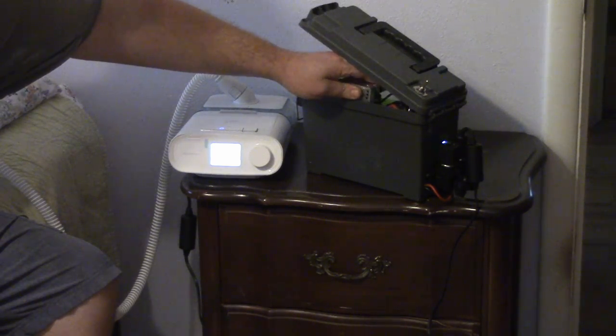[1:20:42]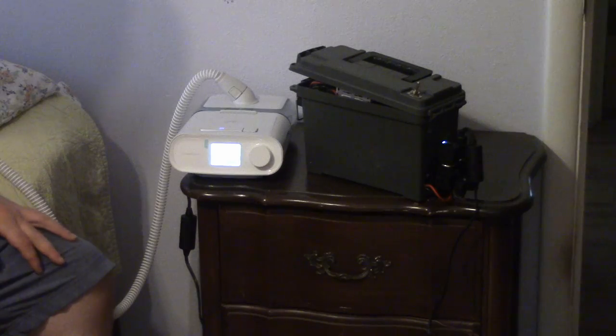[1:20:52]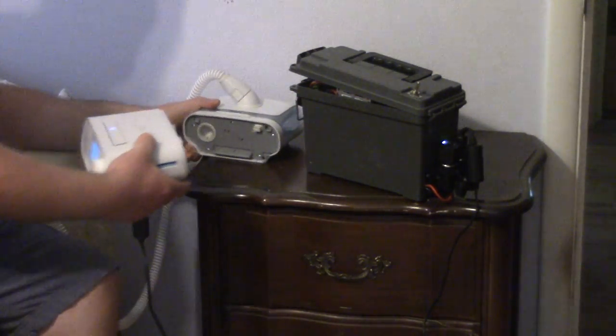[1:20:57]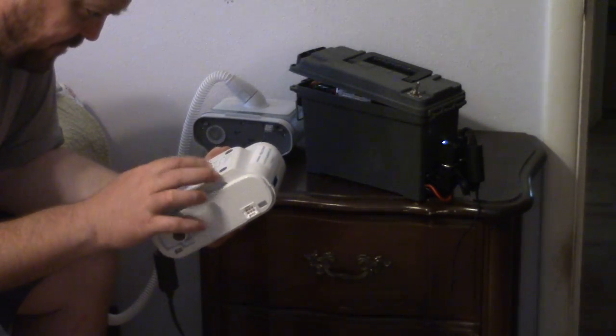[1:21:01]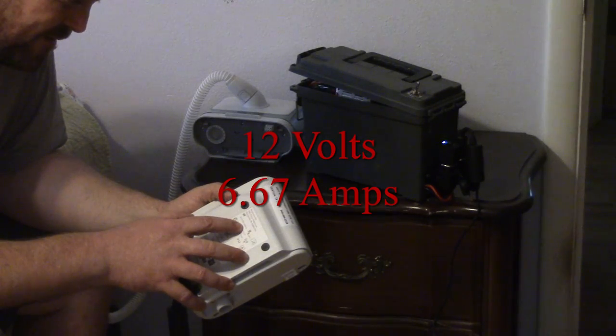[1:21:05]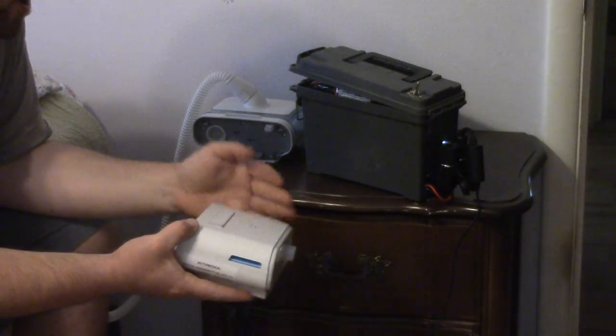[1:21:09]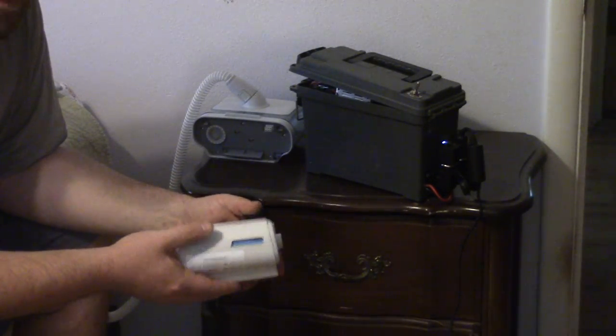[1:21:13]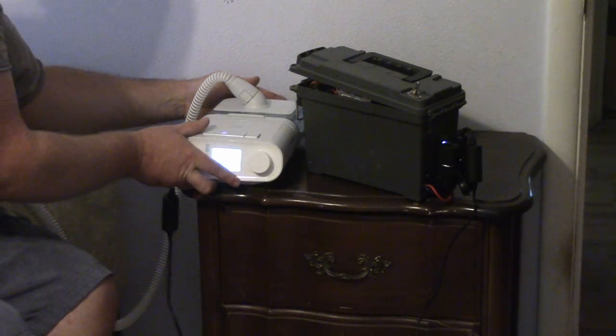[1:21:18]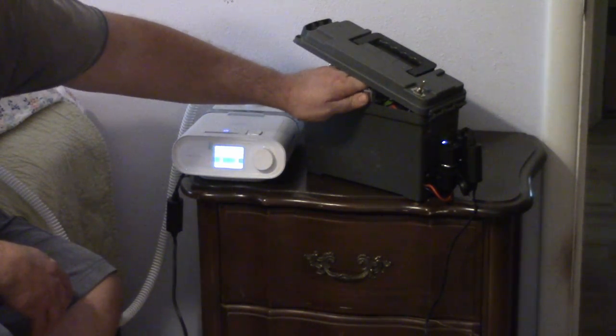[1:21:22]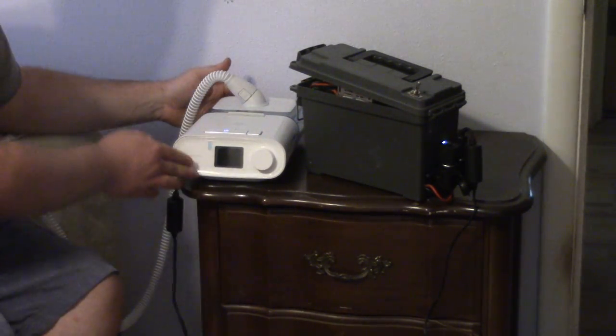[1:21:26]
Let's see where we're at. So this buck converter is kind of hot. It's not scary hot. It's just warm to the touch. Pulling however many amps this thing draws, I think it might be kind of a big issue. We'll have to see if the temperature's different. See, this is rated for 12 volts at 16.67 amps. So, I don't know how many amps I was drawing. Maybe 6? Maybe it's the full thing? Yeah, I have no idea. But maybe this 10 amp buck converter isn't the right choice for running the humidifier portion of this.
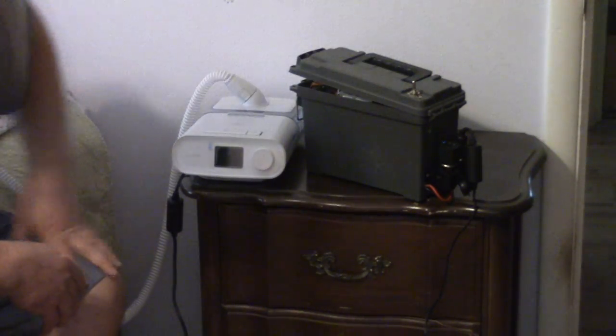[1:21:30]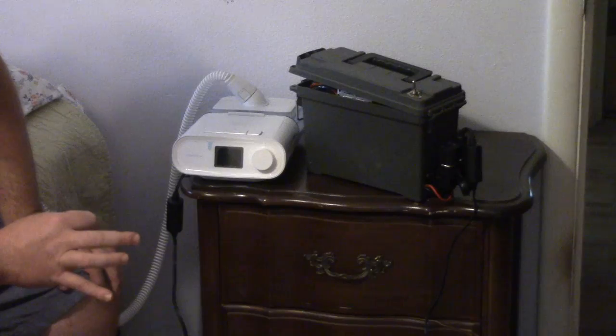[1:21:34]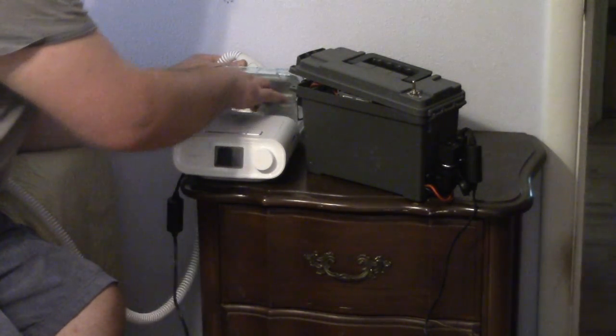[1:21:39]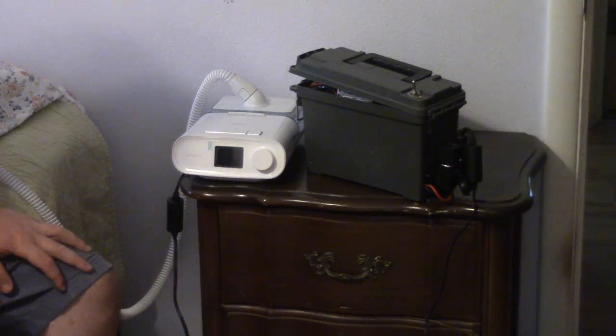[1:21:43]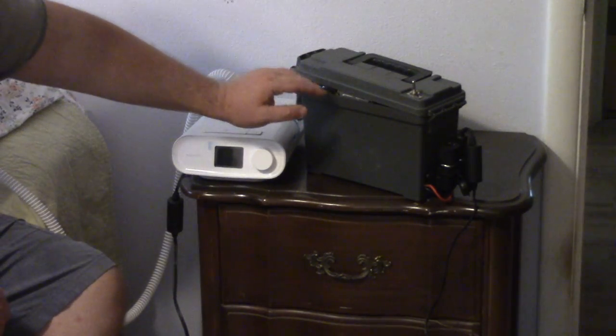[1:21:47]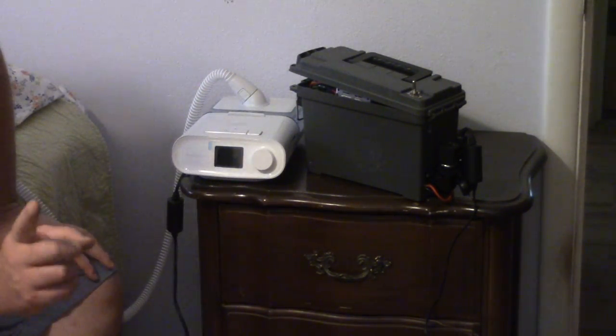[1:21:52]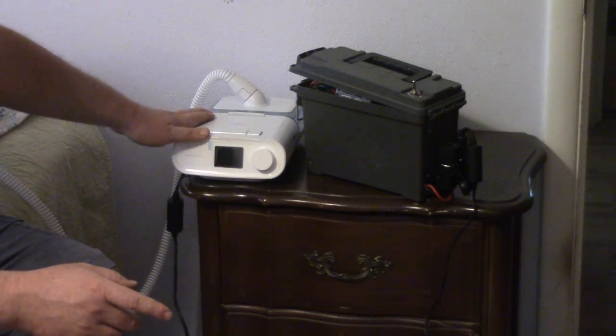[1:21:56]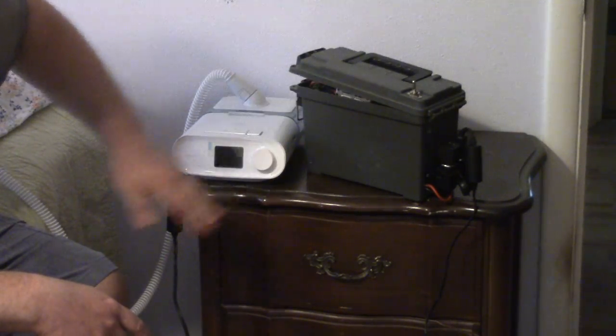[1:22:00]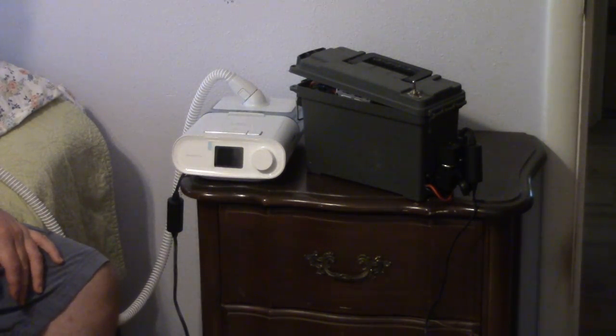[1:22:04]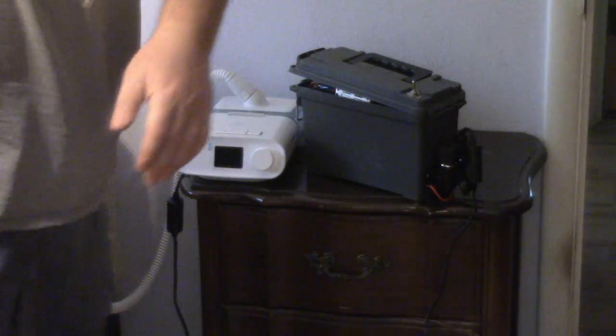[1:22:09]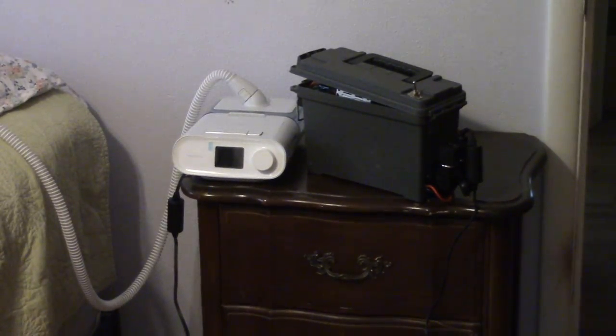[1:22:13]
But, you know, that was an excellent test. The hose is hot. The humidifier plate is hot. These batteries can handle it. And yeah, this buck converter can handle it, I guess. But tonight, I'm going to sleep with no humidity, no heat, just this CPAP, and see if it'll last the whole night, and if it does, I'm going to edit this video and post it. So cool. Oh, nice little nap after a kind of hot weather.
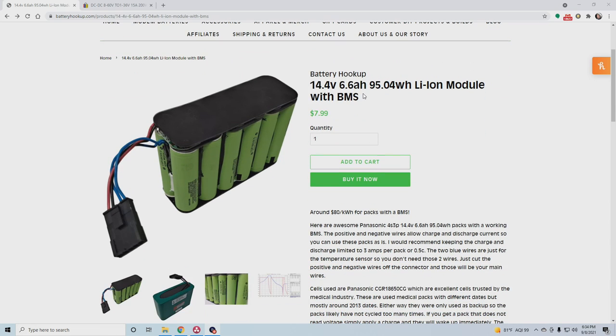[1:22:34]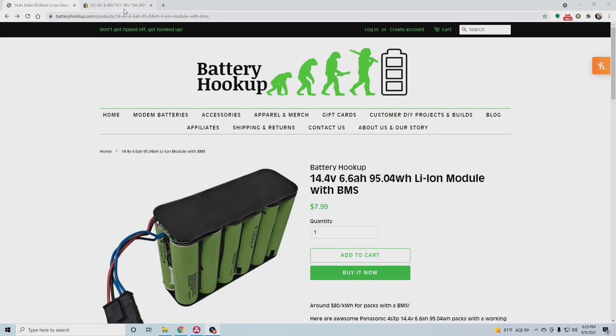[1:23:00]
Oh my gosh, guys, I am so sorry for how long this video is, but it's going to be an insanely long video. I just want to recap just a few things, but these batteries, I think they're awesome. I used this thing for 2 nights, and I lost less than half of a volt, because I didn't fully charge it and the battery settles, so we lost maybe 0.3 to 0.4 volts over 2 nights of using it with no heat or humidity, just the CPAP. And that's excellent. So I would go for it.
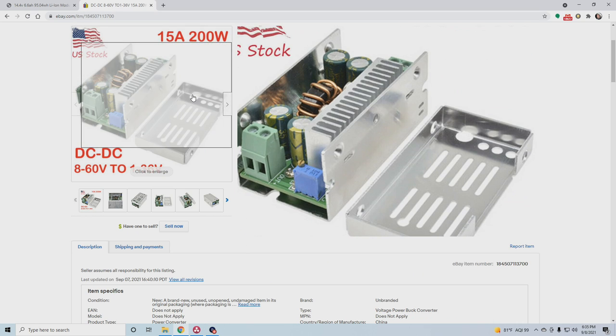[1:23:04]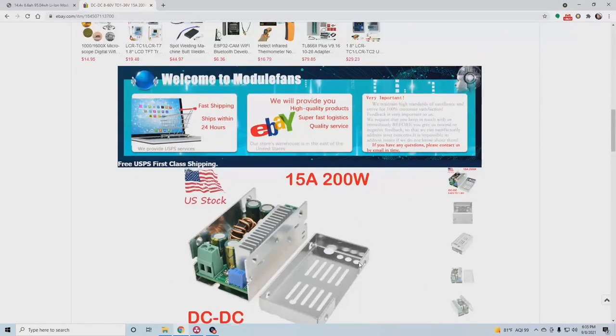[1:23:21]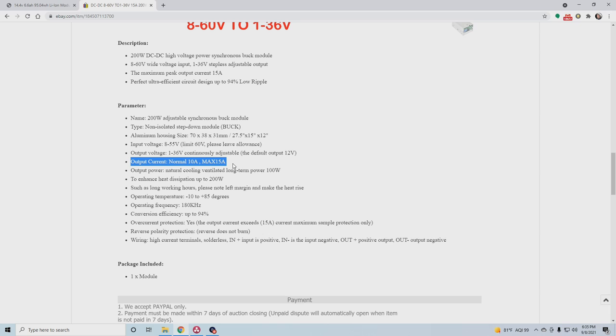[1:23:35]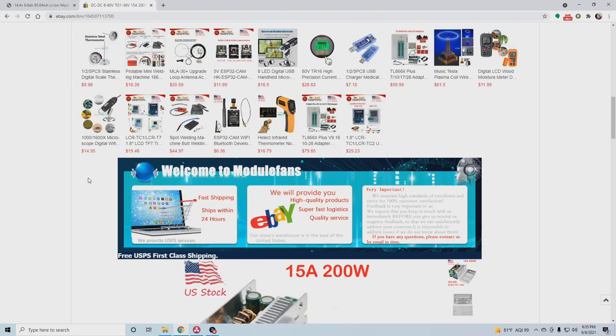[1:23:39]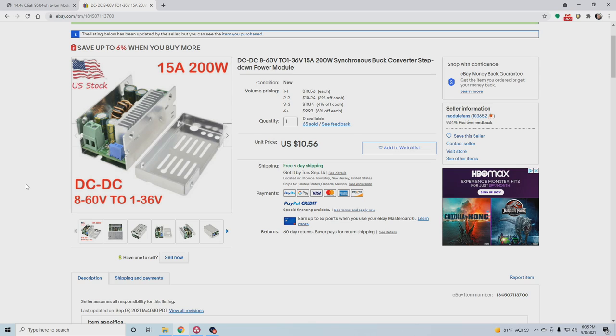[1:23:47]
Now, this buck converter I bought from eBay, and it's this DC to DC, 8 to 60 volt to 1 to 36 volt, 15 amp, 200 watt synchronous buck converter step down power module. Even in its little data sheet here, it claims that it can do 10 amps to 15 amp max. Just because it got hot when I was using the heat and humidity, I don't believe it. I think this little $10 thing is completely acceptable for what it is, right? It works. It regulates the voltage, but I don't think you can trust what the amp rating of these things are. That's just a little more heat than I think it should produce.
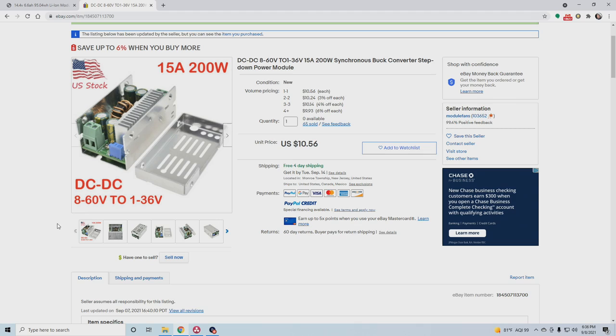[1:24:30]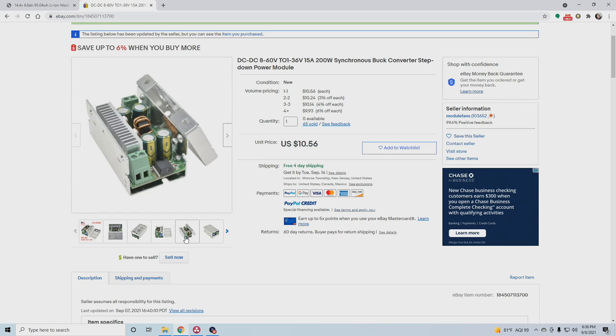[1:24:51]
Build your battery backups before the grid collapses again.